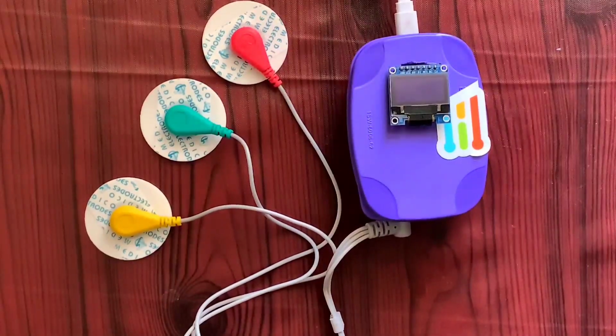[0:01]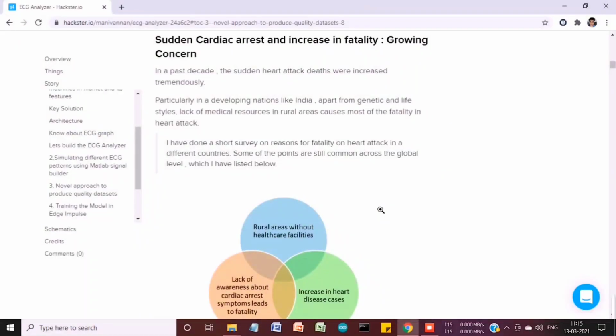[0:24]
Hello everyone, I have developed an ECG analyzer based on TinyML using Edge Impulse software, and one of the major advantages is portability, so that this module can be ported in any microcontrollers. One of the global problems was the increase in fatality rate due to cardiac arrest.
I have done a very short survey on the reasons for the fatality rate. In rural areas, there was a lack of healthcare facilities, and also among the people, there was a lack of awareness about cardiac arrest symptoms, which leads to fatality.
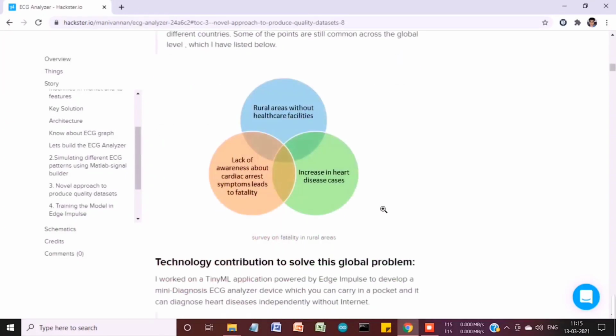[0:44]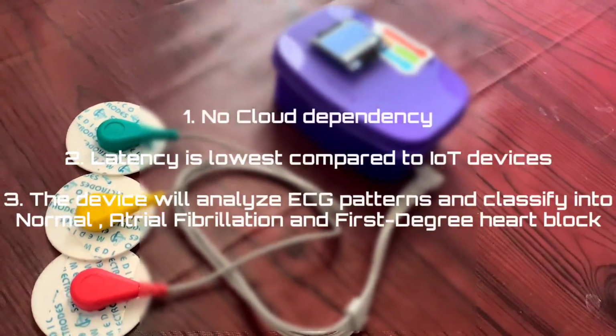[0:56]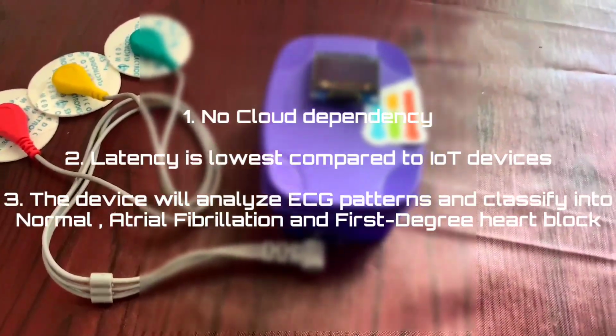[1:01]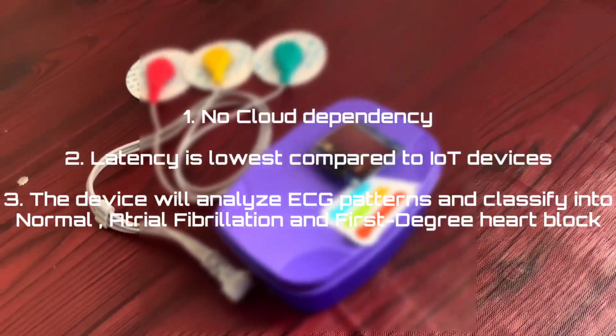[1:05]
And in the present market, if you look at the ECG analyzer devices, all of them have a dependency on the internet or a high processing computer application or a mobile application. In many developing nations, healthcare facilities and internet facilities are still not accessible to everyone. More specifically in rural areas, it's still a questionable one.
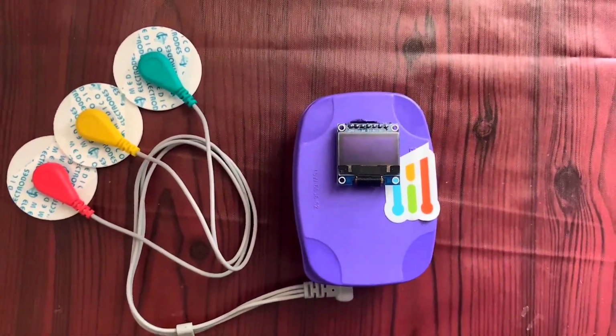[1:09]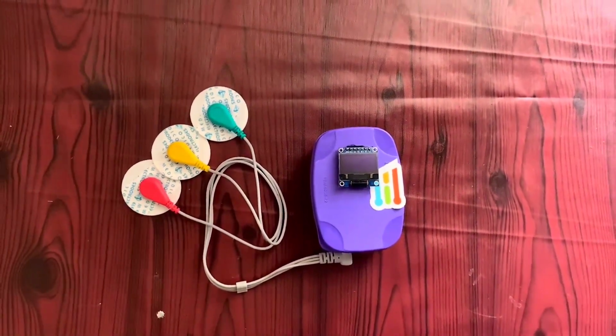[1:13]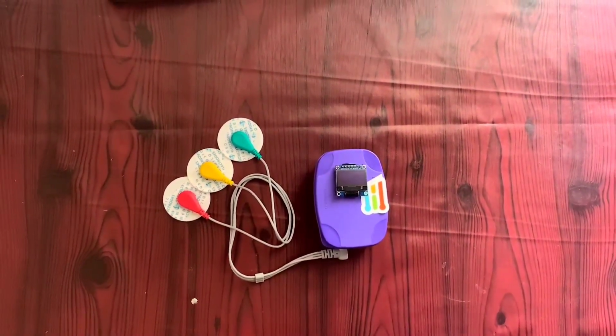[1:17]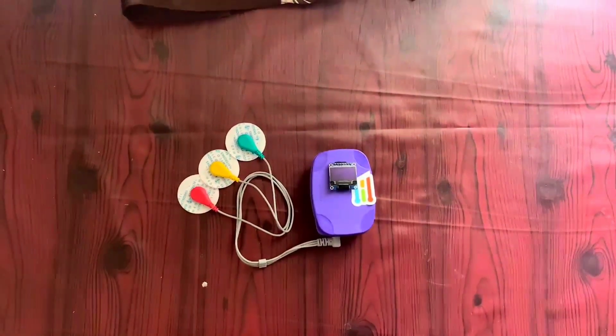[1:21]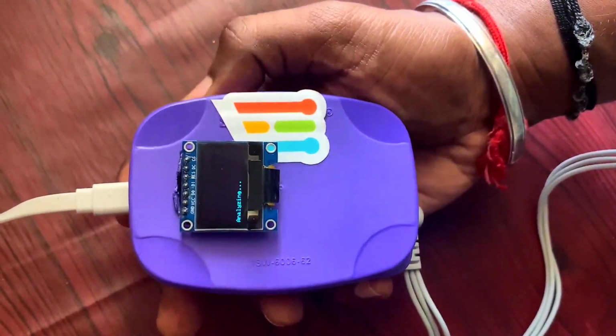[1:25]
I want to break all this gap, so I have developed an ECG analyzer which has no dependency on the internet or any high computer applications. So it can be easily portable to any microcontrollers, and it will be easy to use like a normal digital thermometer. This ECG analyzer will predict atrial fibrillation, AV block 1 and normal.
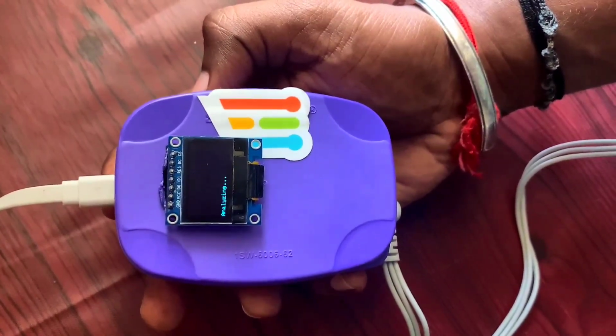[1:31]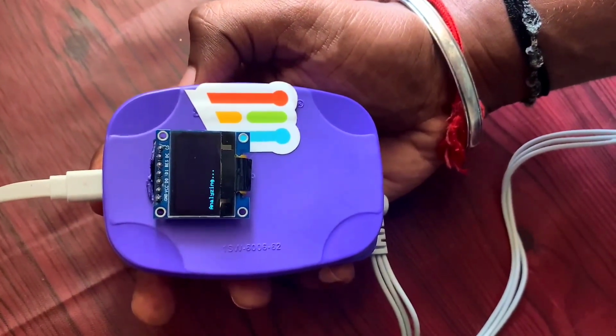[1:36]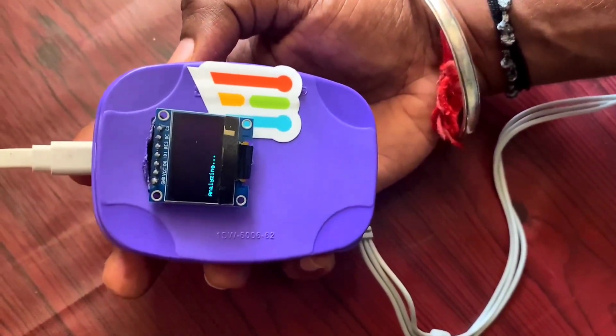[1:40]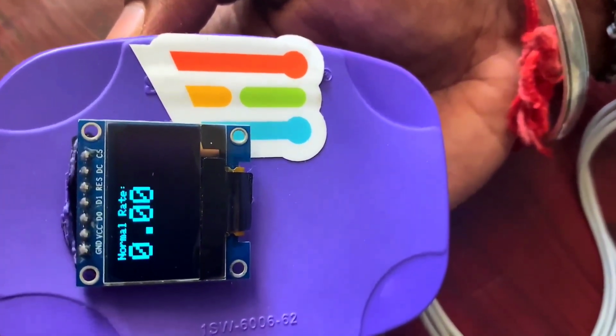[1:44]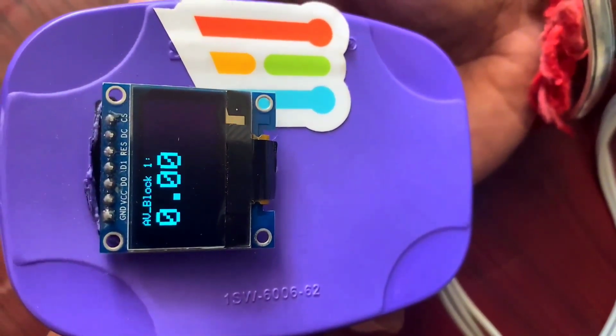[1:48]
This algorithm will run for 1 minute, and it will display the rate of each case. For example, if you are a normal person, there is no deviation, it will display normal as 99 to 100%. If there is any deviation in your ECG, if it predicts atrial fibrillation, it will display the atrial fibrillation rate.
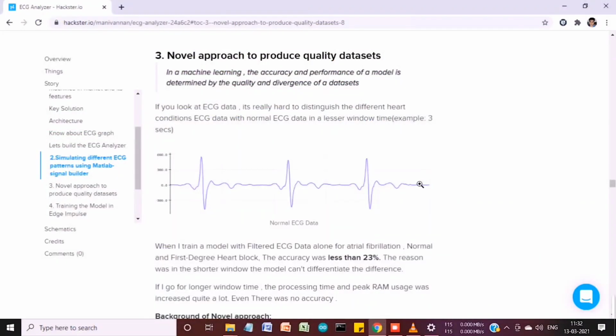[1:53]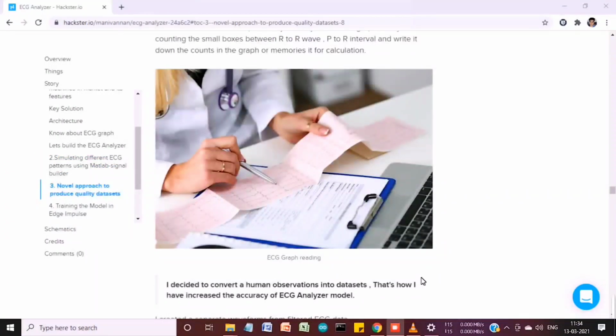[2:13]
The ECG graph will be almost similar for all the ECG conditions like atrial fibrillation, normal or first degree block. So I achieved an accuracy which was very low, less than 23%. In order to improve the reliability and the quality of the model, I approached a different kind of mechanism, where I decided to convert a human observation into a dataset. That's how I increased the accuracy and also the reliability of my ECG analyzer model.
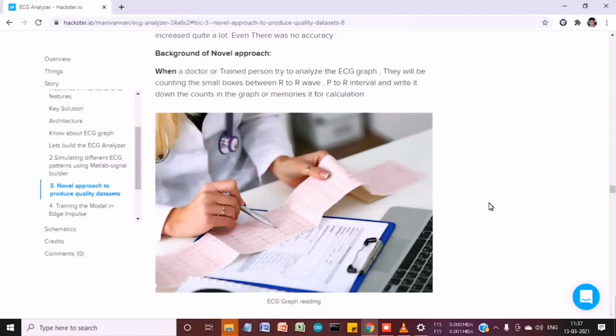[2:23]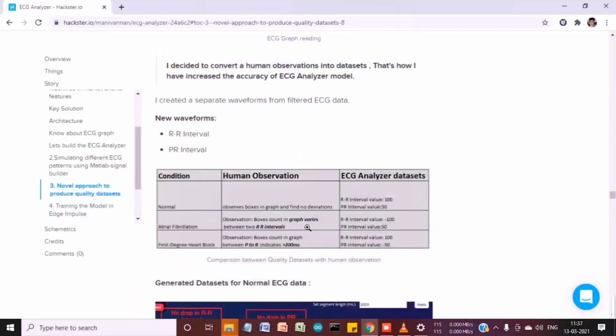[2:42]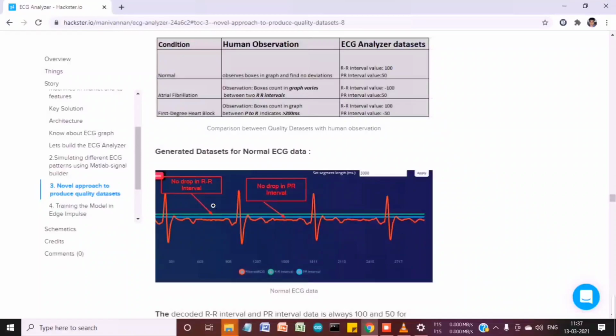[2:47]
For example, when a trained person analyzes the ECG graph, they will be counting the small boxes between the R to R waves and the P to R interval. So this was the human observation. What I have done was convert that human observation into a dataset. I have decoded my normal ECG data into three different waves: the normal ECG data, the R to R interval and the PR interval. Based on this, the quality of the datasets was increased.
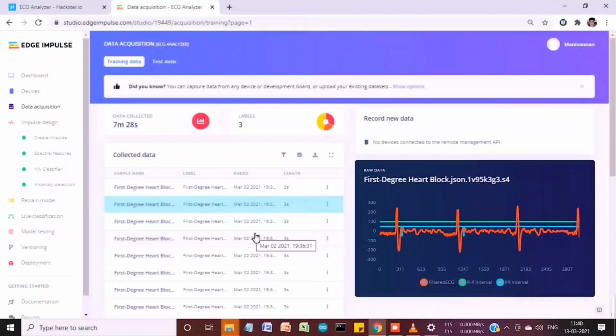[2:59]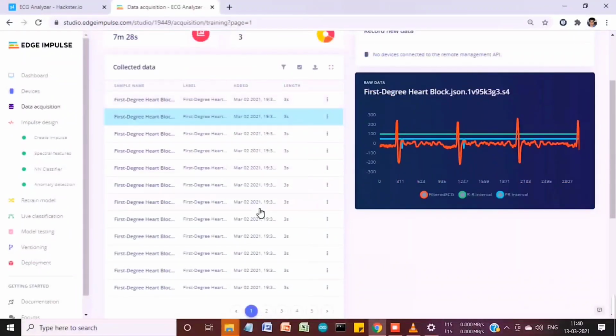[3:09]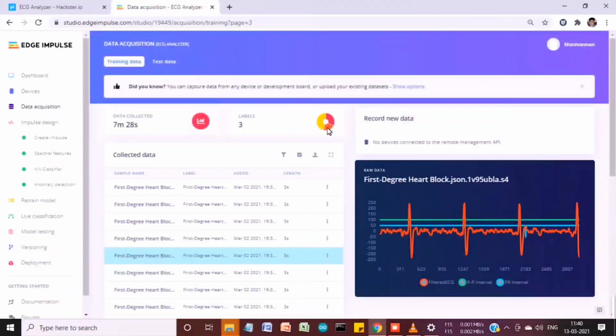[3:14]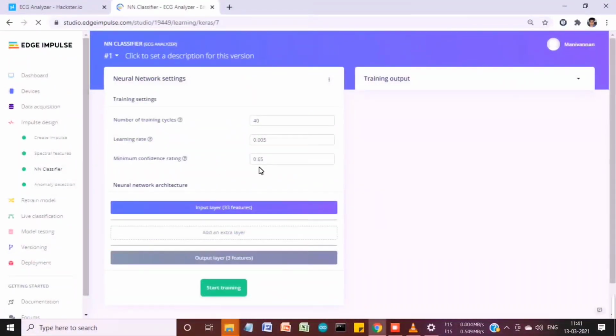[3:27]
In Edge Impulse software, I have collected data for three different conditions: normal, first degree heart block, which I have called AV block 1, and atrial fibrillation cases. So we can look at all the datasets here. I have collected them in this ratio, with normal as the major one, and atrial fibrillation for 2 minutes 20 seconds of data. I trained this model in Edge Impulse, and I have achieved more than 90%.
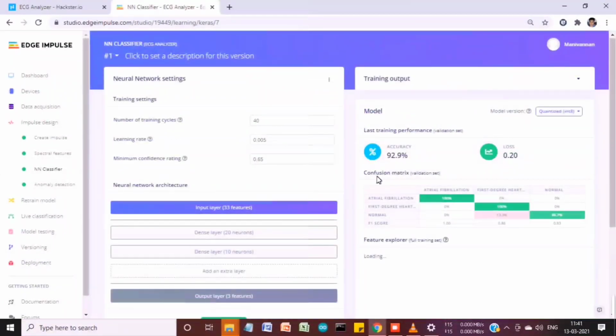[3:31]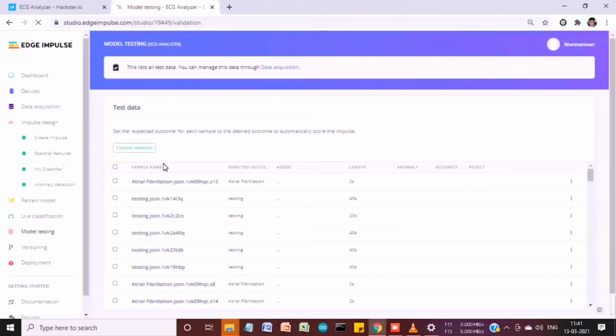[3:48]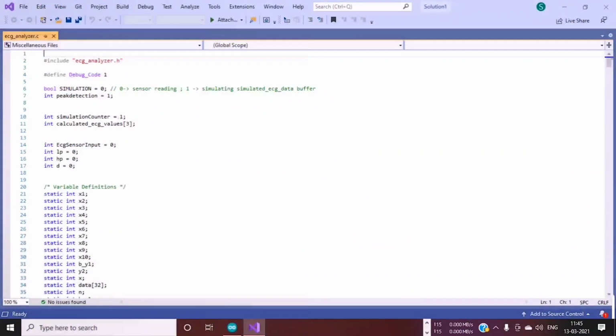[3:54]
You can look at the accuracy level and see that there is a slight deviation between the first degree block and the normal, and atrial fibrillation was 100%. I have also tested this model using 92 test cases, and based on that, my accuracy level was 97.30%.
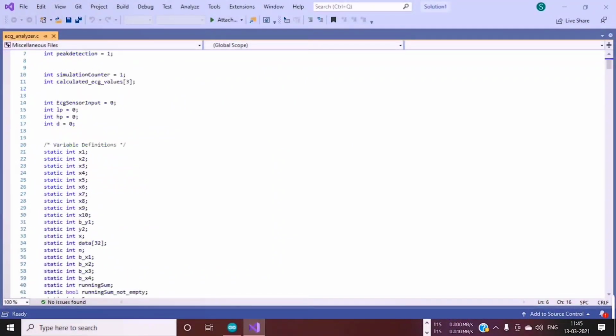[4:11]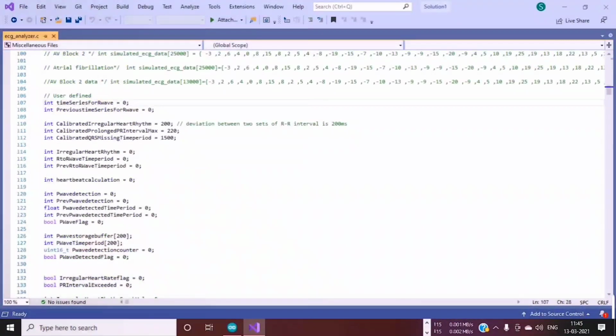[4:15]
If you want to simulate different ECG data for testing purposes or for training the modules, you can set it as 1, and I have also added the buffer. So you can see I have added different data buffers, which will be more specific to atrial fibrillation, normal ECG data or AV block 1. So you can use it for testing, or you can use it for training your model.